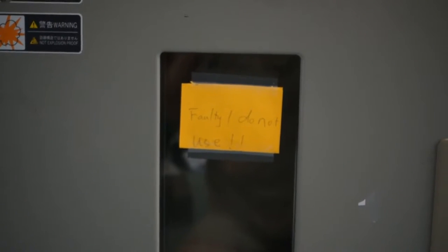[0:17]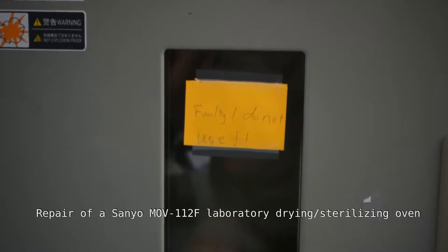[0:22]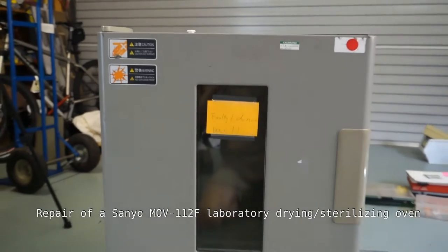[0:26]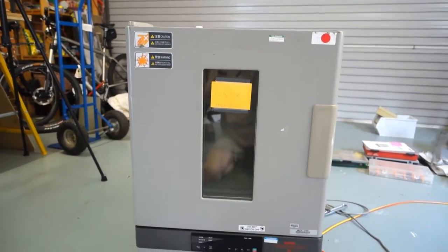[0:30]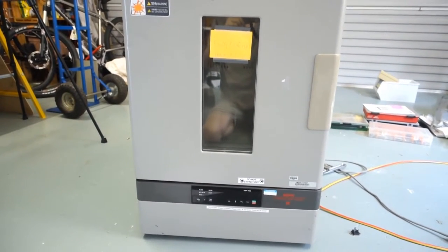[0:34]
Faulty, do not use! What are we looking at today? Well, I'm looking at an oven. It's not a cooking oven, but a sterilizing and drying oven. It's not worked for years. Somebody just asked me to have a look at it, so that's what I'm going to do.
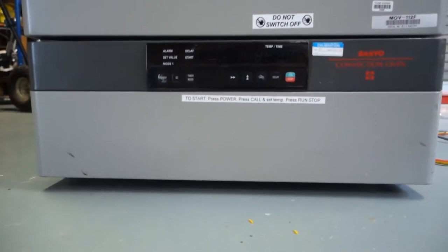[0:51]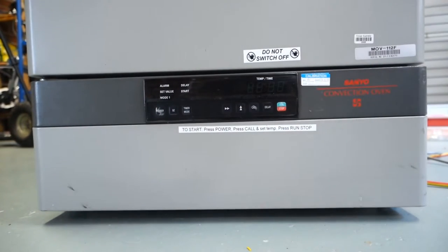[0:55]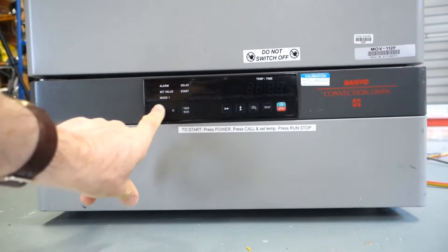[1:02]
Now, I have to admit, I've had this powered up just a few minutes ago just to see what happened. So I'll go through that and then we'll start talking about what the problem might be. I'll pop the camera down on the ground. Having to work on the ground today, it's just too heavy to lift up onto the bench. If I switch the unit on, there is an on-off switch on the side, and then there is a power button. It actually does power up.
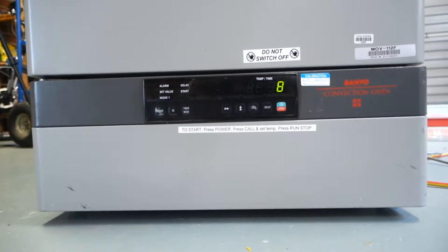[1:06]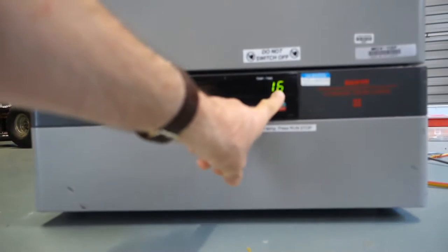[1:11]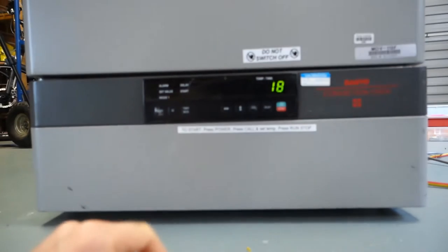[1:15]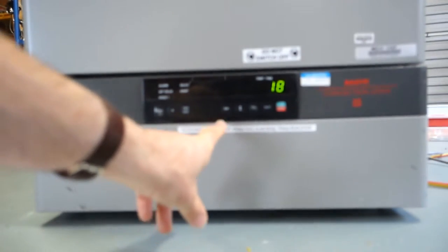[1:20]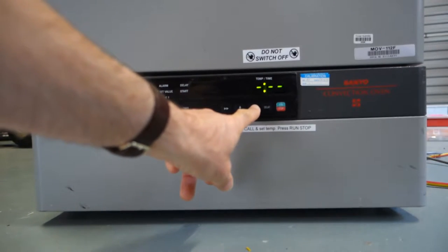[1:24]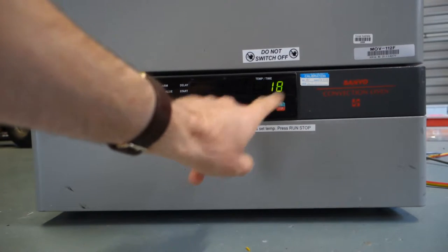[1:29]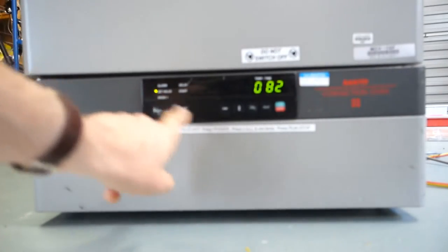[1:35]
Not a bad start. Who says there's a problem with this? I don't know. Anyway, it looks like we've got temperature showing in the indicator here, and that's pretty typical. It's about 20 odd degrees outside, so 18 degrees here in the garage. I think if I press this button, it toggles through three different settings. Temperature, obviously, of the probe. I think this is a temperature setting, set value. And then the last one is some sort of timer.
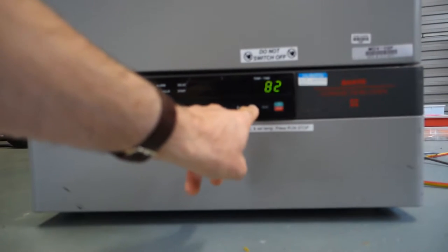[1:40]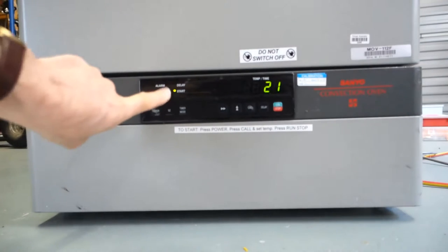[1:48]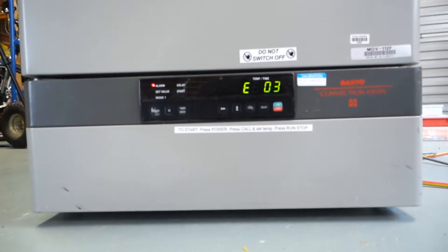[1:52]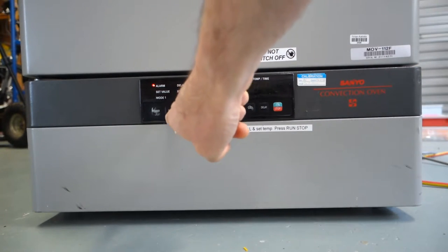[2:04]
I'm not interested in the timer. I'm just going to set the temperature, leave it on 82. It doesn't really matter. Now, if I press run and stop, it does actually start up. The light comes on, but within a couple of seconds, bang. So, not happy. And we've got an error code, error 03. As luck would have it, let me just silence that alarm.
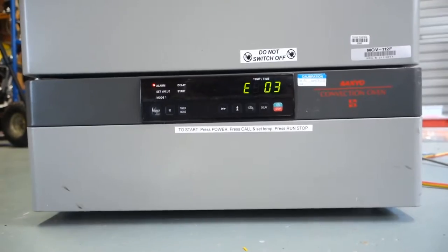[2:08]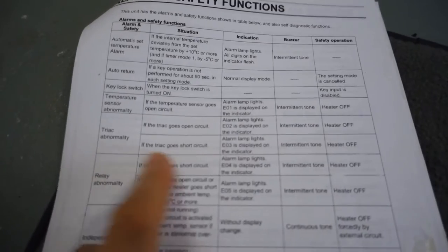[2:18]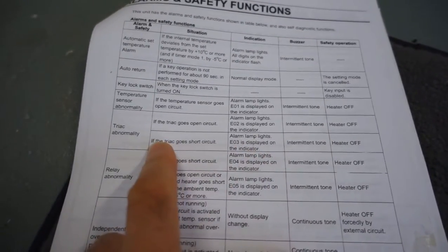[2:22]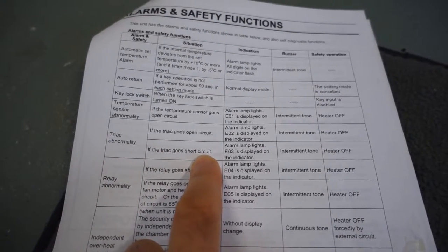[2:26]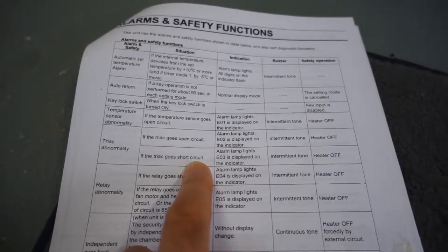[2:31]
Thank you very much. As luck would have it, I actually have a manual. I'm not too sure whether you can see this, but it talks about error 03 indicated in display, and it's about a triac going short circuit. Okay, all right. Time to switch it off and get inside.
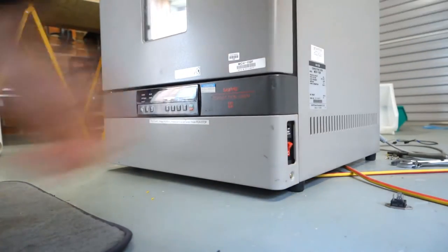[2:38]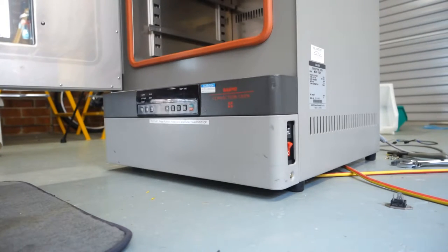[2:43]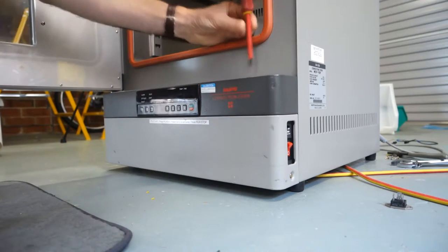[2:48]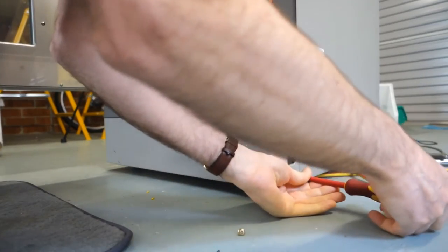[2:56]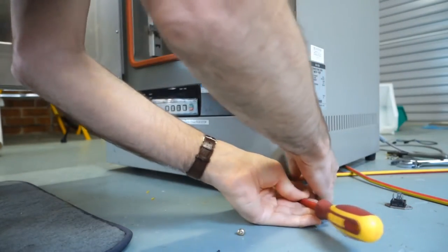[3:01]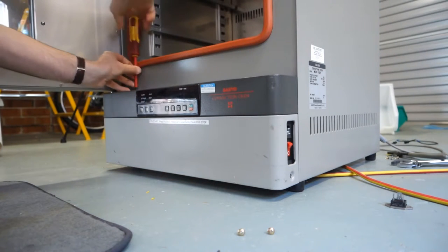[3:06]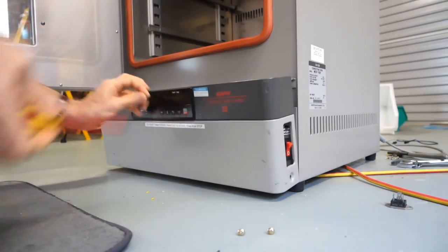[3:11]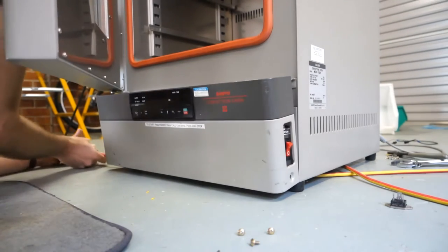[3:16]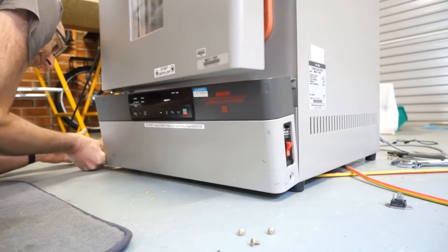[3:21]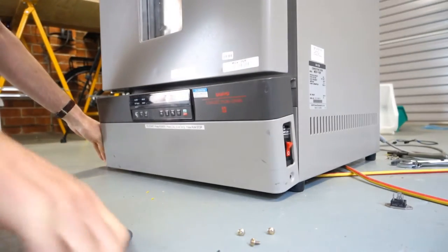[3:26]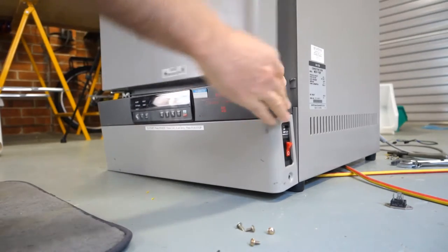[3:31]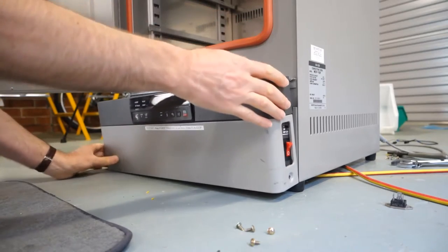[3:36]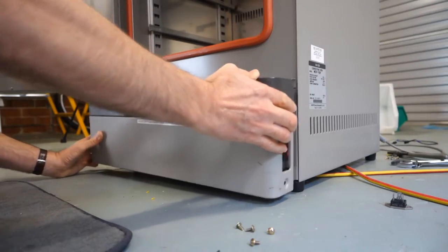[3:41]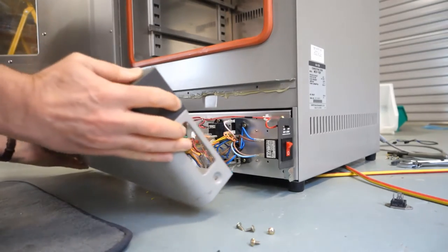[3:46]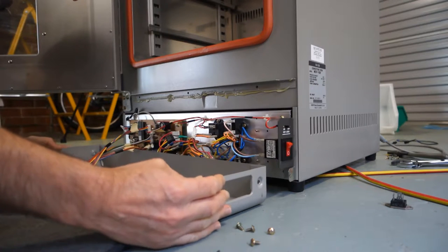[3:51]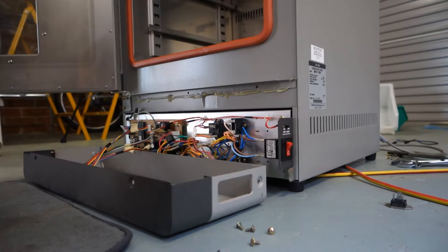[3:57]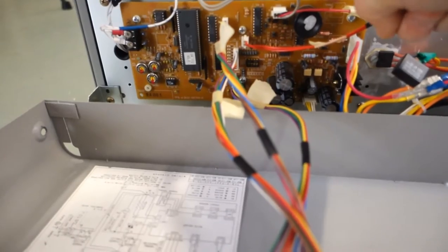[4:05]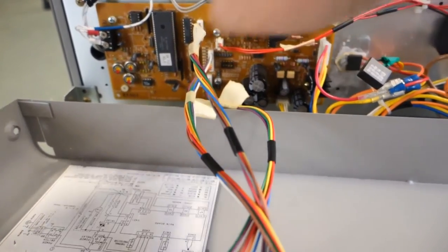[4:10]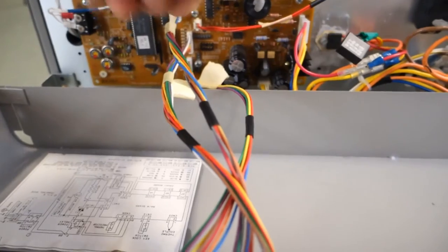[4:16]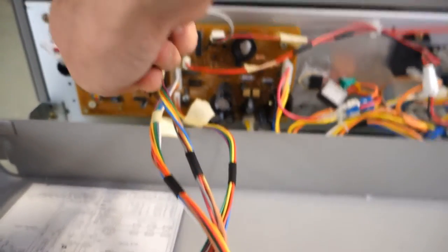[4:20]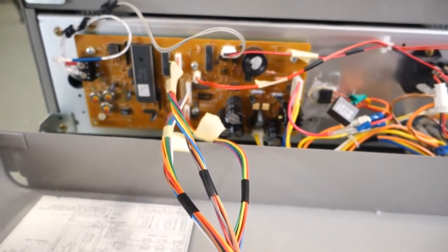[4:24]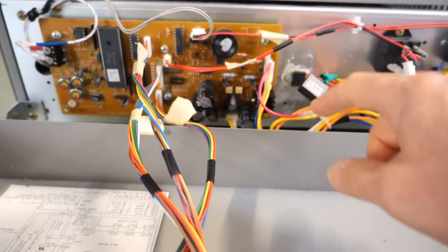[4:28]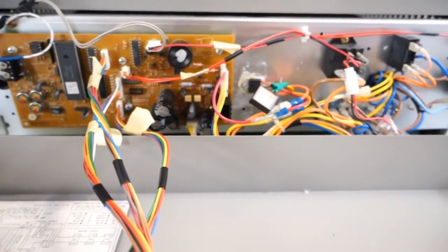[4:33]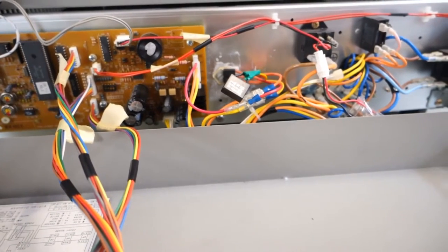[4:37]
Wiring diagram. Quite old school in here. So we've just got, it looks like a single sided board in here. The processor. The thermocouple looks like it's coming in on this left hand side here. That looks a bit, how are you doing? And so does this. Time to look at the diagram, I think.
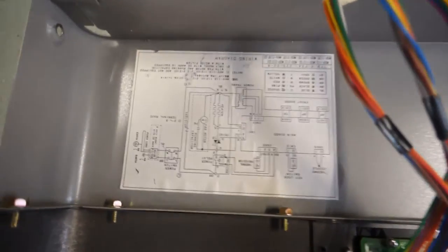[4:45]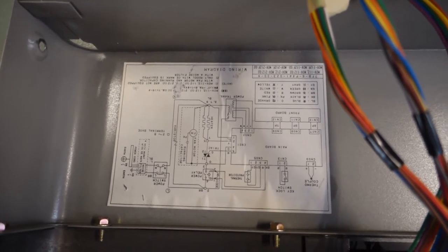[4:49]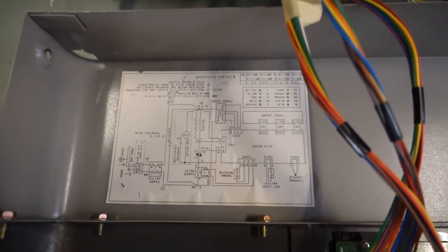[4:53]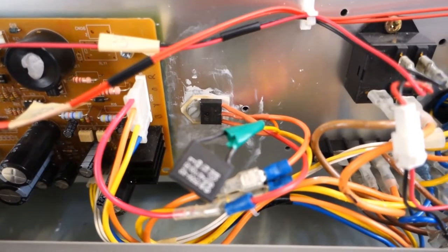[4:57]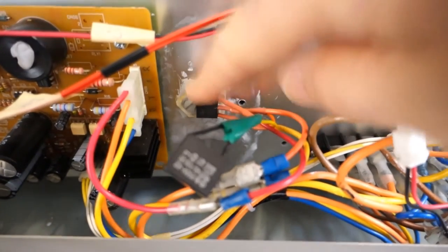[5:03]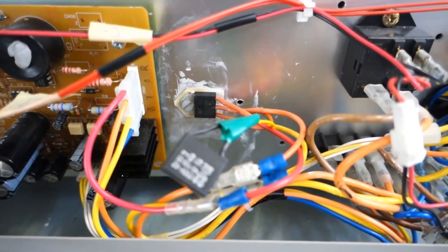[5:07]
As I say, there's actually a wiring diagram on the back of the panel. That makes things a lot easier. Don't do that so much these days, do they? I'll come back in a minute when I've had a chance to look at it. Okay, now there's definitely something wrong here. That triac there in the center of the picture is not the original triac anyway, so it looks like somebody's tried to repair that at some stage.
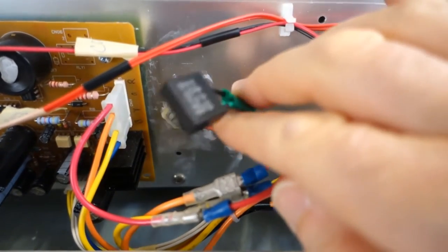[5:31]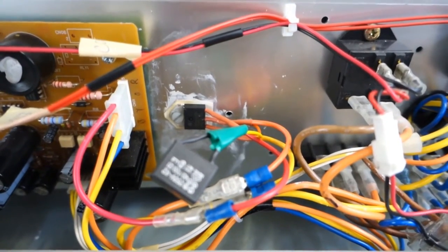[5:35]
I've managed to go online and download a full wiring diagram. The wiring diagram on the back of the panel here was useful, but I've actually found a more detailed one online, and I'll show you that in a minute. But that triac now is not original, and neither is this rather thing flapping around in the breeze. This X2 capacitor is supposed to be a MOV, metal oxide varistor. I'm not too sure whether that repair ever worked or whether somebody had a go, failed, and just left it. But let's see if we can find the original part and get that installed instead.
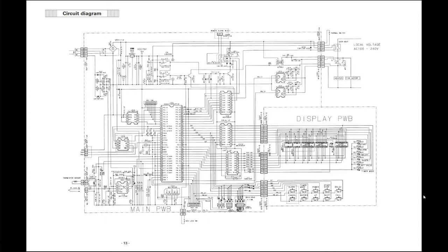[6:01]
Okay, here we are on the desktop, and I've been lucky and managed to find a whole PDF service manual for this particular oven. We're looking at the wiring, or circuit diagram rather, for this particular unit. It's rather small, but I am hoping that you can see up in this top right hand corner, we've got the triac, and you can just see the MOV sitting across the terminals there, the wiring coming into this connector here, and indeed the gate of the triac is driven through an opto isolator.
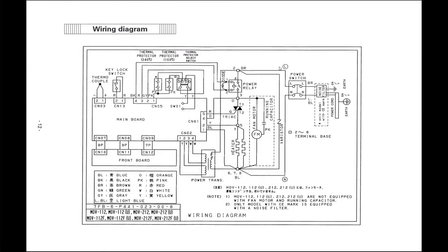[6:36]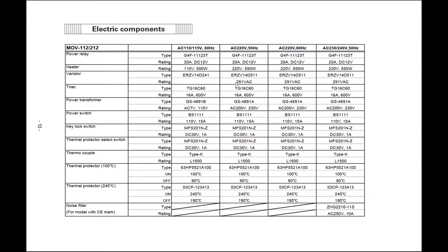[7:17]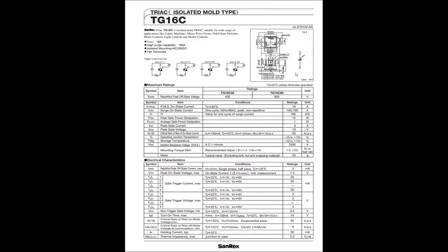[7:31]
Another very interesting page in the manual though is where the triac is denoted here. So I've got an actual part number that I've been able to search for, and I found a PDF for that particular part. And here we go, it's a triac. Indeed, it looks different from the one that's in there. It seems to have some sort of tabbed metal back, although it's an isolated molded type.
And a triac, if you don't know, is a fairly straightforward device. It's two diodes back to back, I guess quite similar to having two SCRs or thyristors back to back, the third leg being the gate that switches these. It allows the current to flow in either direction depending on which phase of the AC is running at that particular time.
So I've been able to find this device, the original equipment, on eBay, so I've placed an order for it, a few dollars. It's going to take around about 3 weeks, I assume, to come from Hong Kong or China, and so we'll get back to the video at that point.
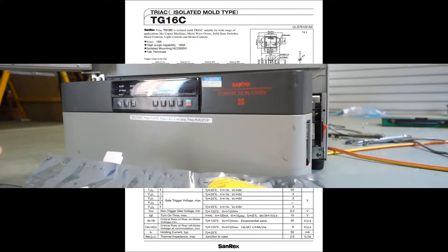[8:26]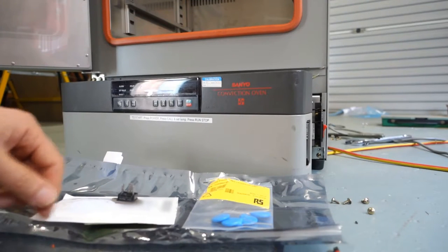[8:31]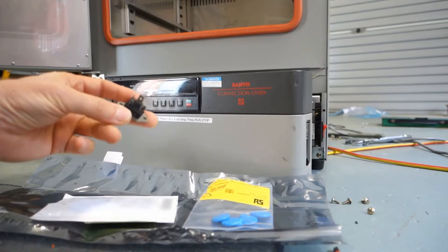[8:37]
So finally, here we are, about 3 weeks later. Just received this triac through the post, all the way from China. Sold as a new part. Not too sure it is though. I think I can see some evidence of where it's been clamped to a surface before, and those spade terminals don't look perfectly clean to me either.
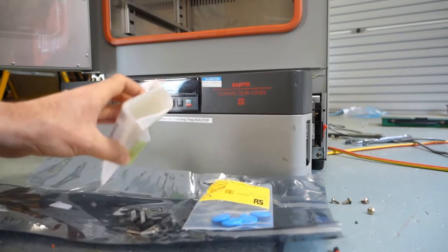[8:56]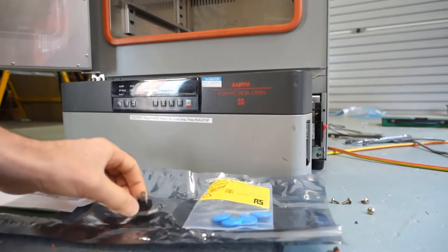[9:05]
Also, I'm not very happy because it was sent in a non-anti-static bag. It was just straight inside that envelope. Gee, I don't know. Let's hope it survived the journey.
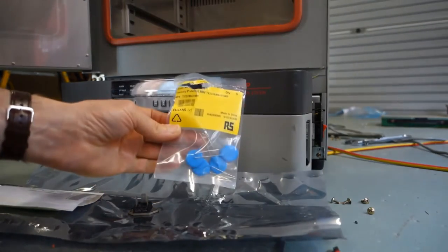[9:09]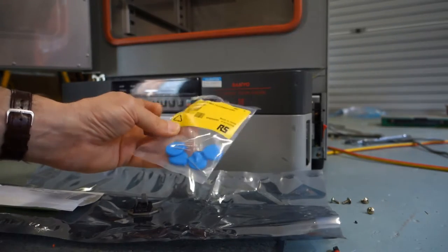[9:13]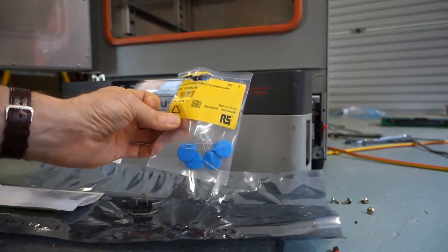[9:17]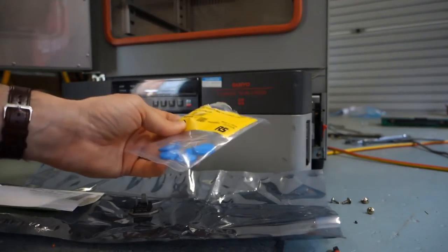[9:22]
I also bought a pack of MOVs from RS Components. So yeah, hopefully they're made in China too. But yeah, hopefully these ones are working and no problems. So let's just go ahead and put the actual item in, see if it makes any difference to this unit.
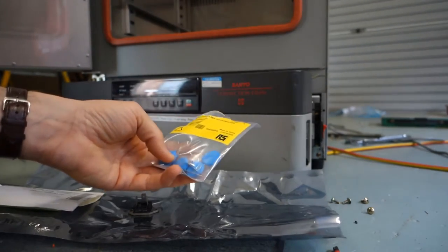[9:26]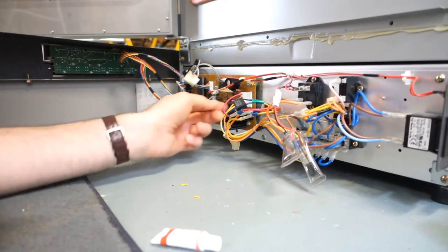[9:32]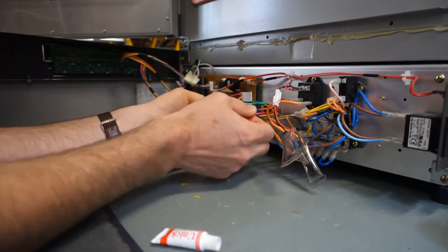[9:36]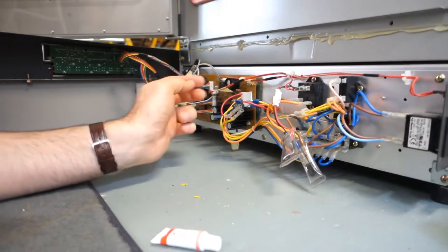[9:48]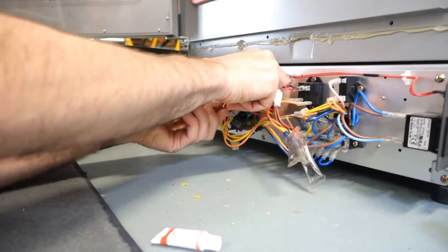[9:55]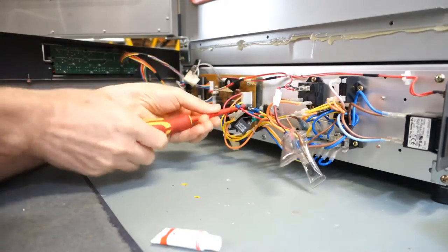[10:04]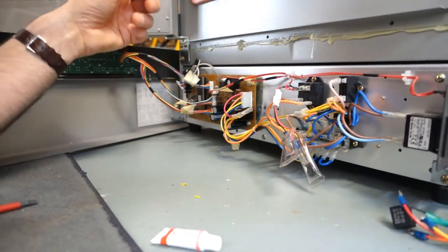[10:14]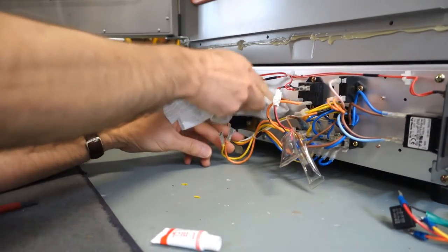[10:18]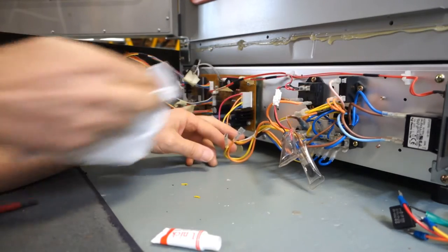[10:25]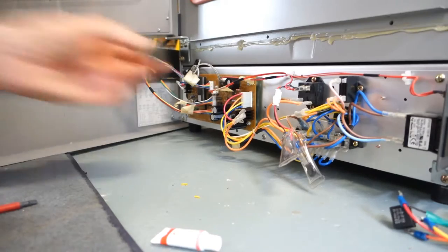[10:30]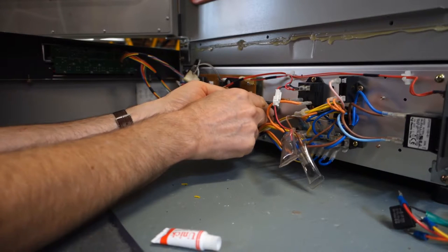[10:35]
Okay, now I have a wiring diagram, so I'm not so worried about just disconnecting these. Everything's disconnected, yep. That's good. That's good. So that can just come off in one go. Hands being in the way. That's quite a long screw. Okay, don't need that now. Clean this up a bit first. And we'll look to see whether... Yeah, those two holes match up there.
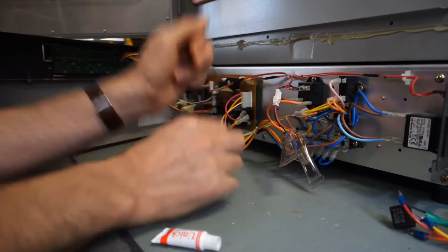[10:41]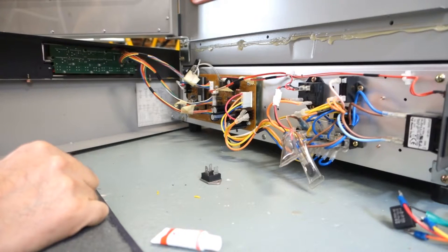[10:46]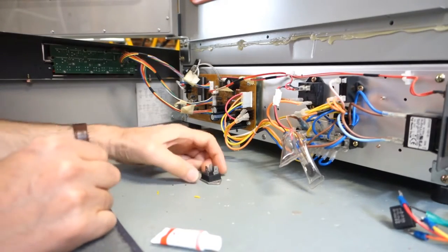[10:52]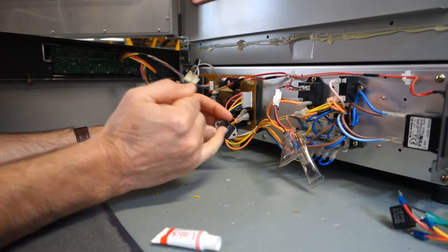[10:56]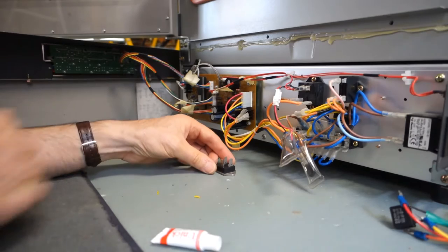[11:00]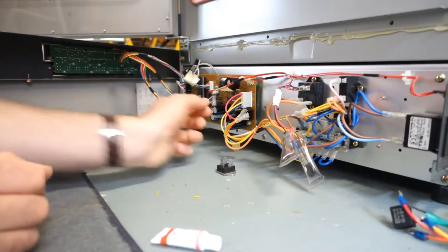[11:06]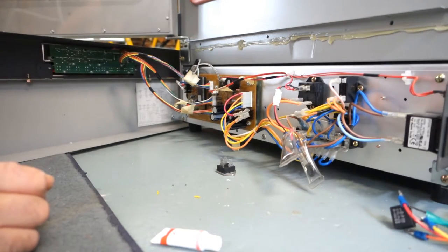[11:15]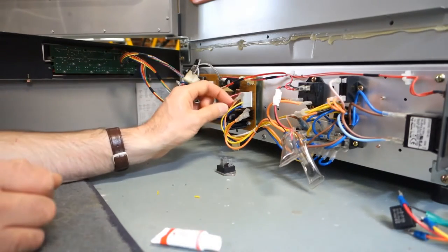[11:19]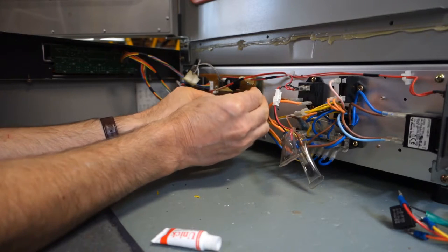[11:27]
Now this triac has got an isolated back, isolated mould type. And the three legs, there's two for the two anodes, and then there's this other leg here, which is a thinner leg, which, looking off the data sheet, is the gate. And indeed, that spade is just ever so slightly smaller. That matches up with the wiring diagram, that the red is indeed the gate. So, and the other two, I don't think it really matters which goes on which. And that one may end up there.
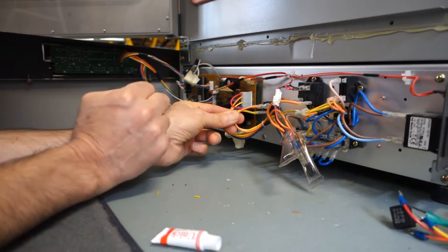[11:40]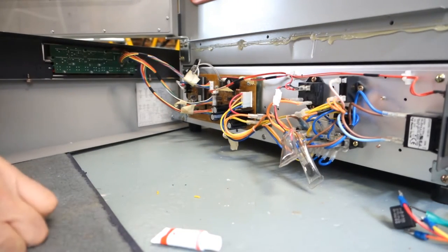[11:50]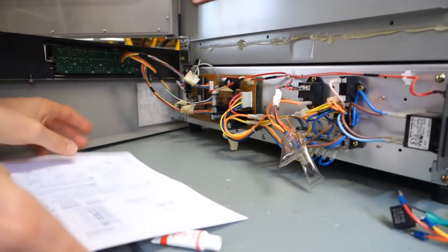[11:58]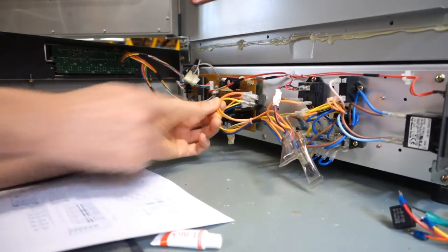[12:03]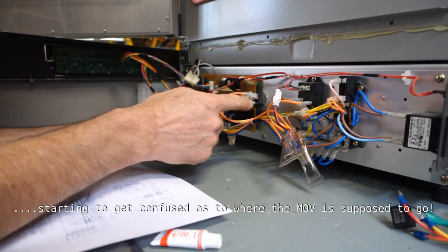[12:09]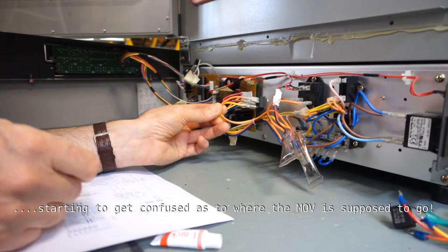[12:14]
And the only other thing is, how did they have the MOV mounted? Without seeing the original installation, I'm not too sure, but on the wiring diagram, the MOV goes across T1 and T2, so it goes across from here to here. Never think about that and come back.
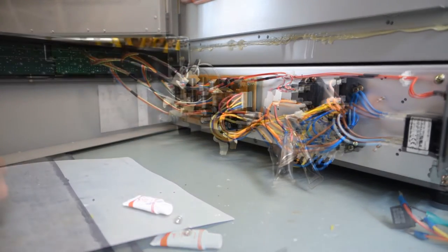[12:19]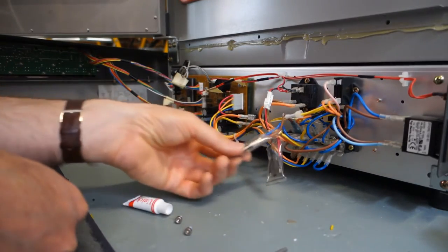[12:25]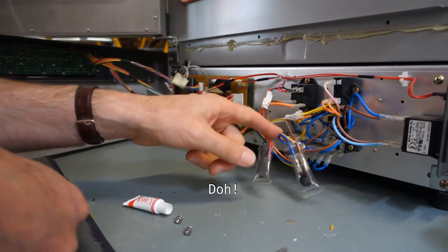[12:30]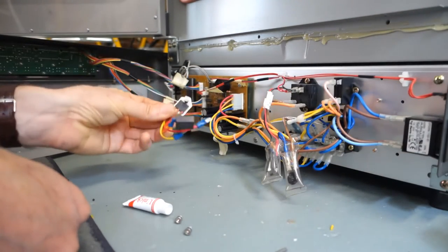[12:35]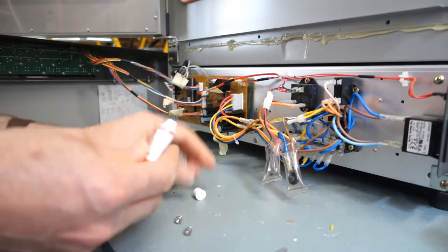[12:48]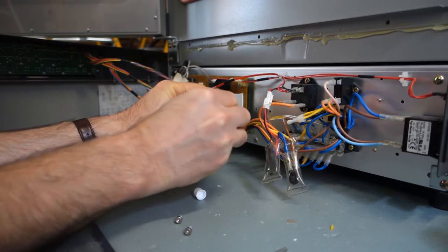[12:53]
Okay, me back again. My mistake, actually the MOV is already installed. It's this one here in this plastic sleeving. It's across the live and the neutral as you'd expect. I got confused because this old triac had this X2 capacitor and I thought somebody tried to use an X2 capacitor as a MOV. Don't know why. Anyway, everything looks okay. All I need to do really is get this gooped up with a little bit of paste, heat transfer paste. Let's get it mounted and we'll see whether the unit works.
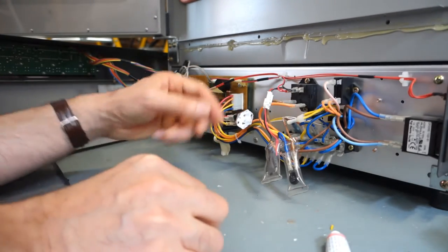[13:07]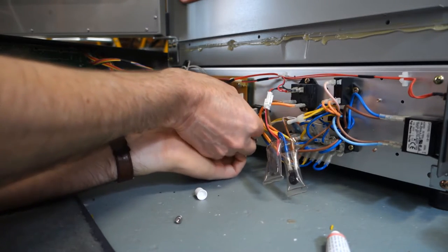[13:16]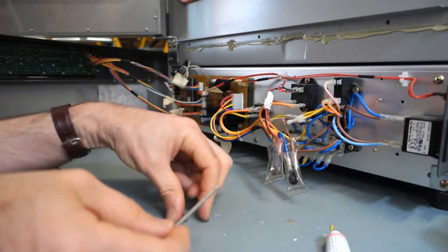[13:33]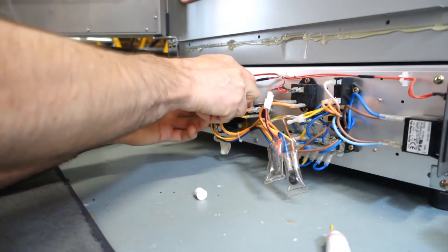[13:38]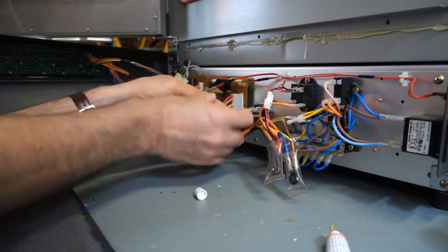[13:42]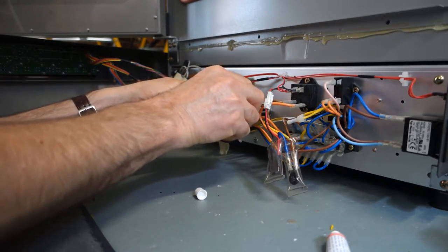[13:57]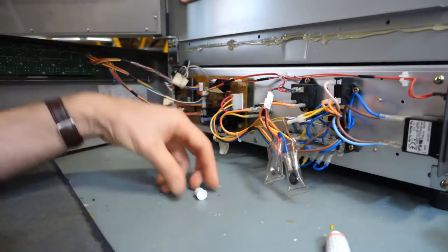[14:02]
Just covering that area. Yeah, as I said, it's an insulated back, or moulding rather, so don't have to worry about any insulation between triac and the chassis of the machine, although I will check it afterwards with a meter, make sure everything's okay. This cabinet's all metal, I guess it's painted, but it's basically all metal cabinet. That's the first one. Second one going in. And tight. Tighten that one up. Yeah, got a bit of paste squeezing out, that should be okay.
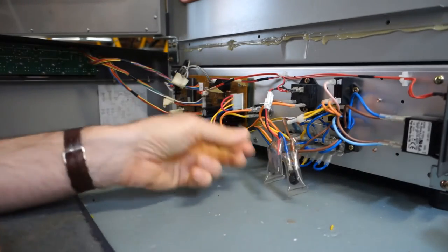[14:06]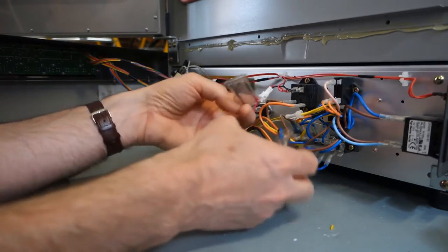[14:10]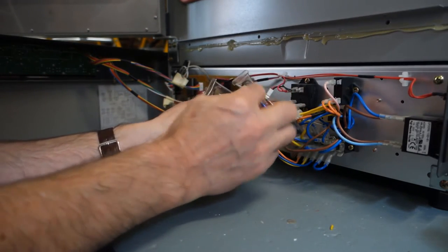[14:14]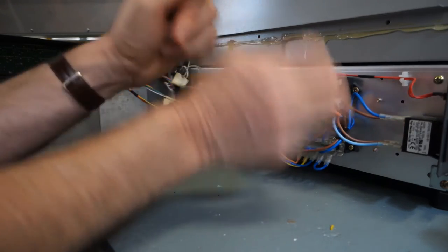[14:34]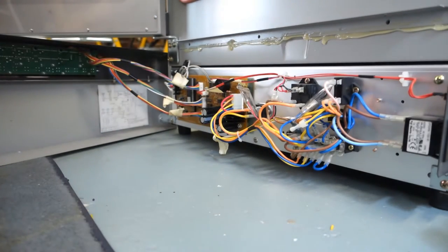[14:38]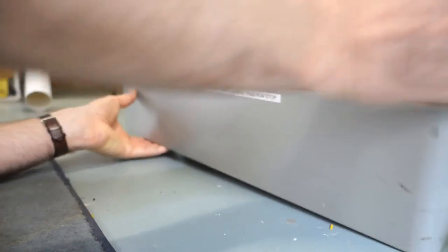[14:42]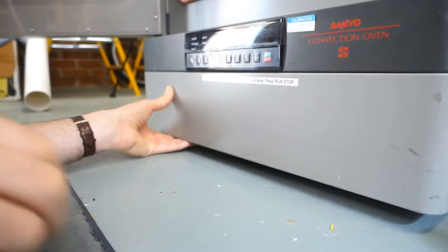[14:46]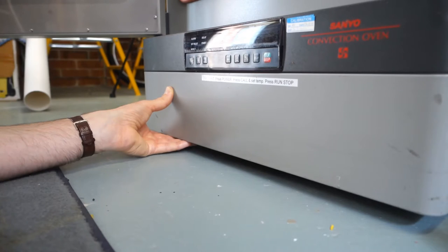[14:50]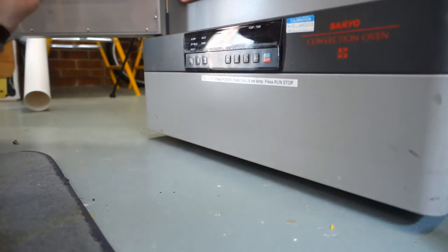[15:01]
Pop the top back on. Everything's looking okay. Very unusual, these, I think. Maybe it's old fashioned. Obviously, if this component were to explode or somehow catastrophically go wrong, there's a secondary sort of covering over them. The other ones are a diode. So, just carefully placing those back in there. Oops. Wiring looks okay. Let's just push this back in position. And I will just pop one screw in, the top here, just to stop this. Off, and let's give it a test.
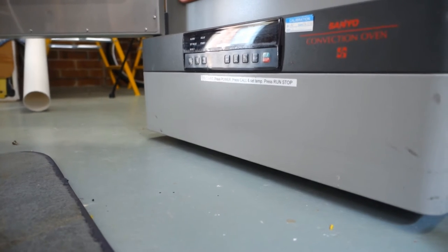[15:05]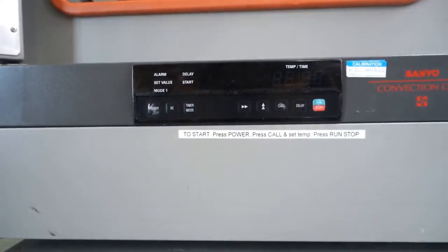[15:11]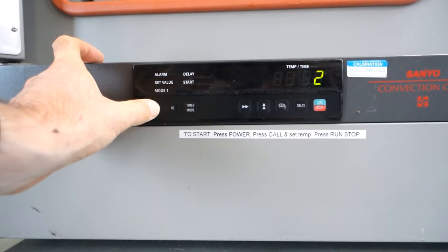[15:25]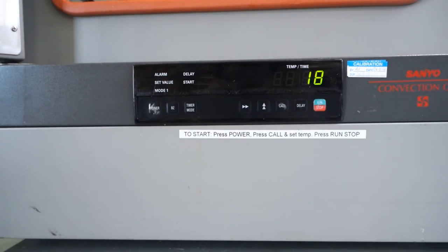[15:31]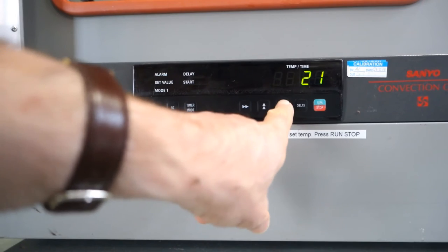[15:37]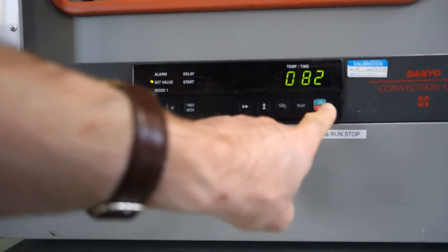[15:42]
I'll just move the camera around to the front. So, power on, all plugged in, switched on, power back on again. Interesting that that sort of ramps up. Haven't really seen that effect before with a thermocouple. Okay, call again, leave it on 82 degrees centigrade, and let's try start.
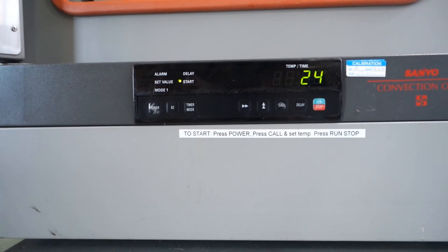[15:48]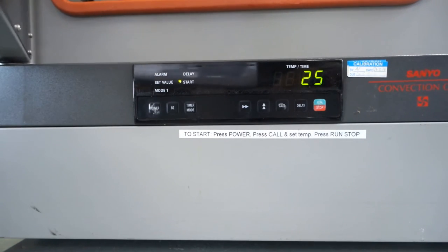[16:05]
I can hear the convection fan is spinning up. Nothing's gone bang yet. I'll shut the door. And we should see that temperature start to rise up, I hope. Maybe I'll just speed the video up for you guys here, but I'll leave it running and see what happens to the temperature.
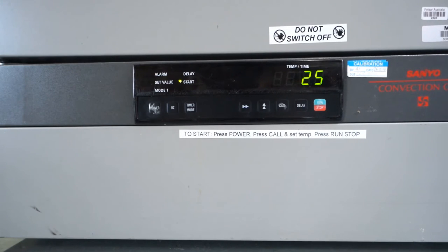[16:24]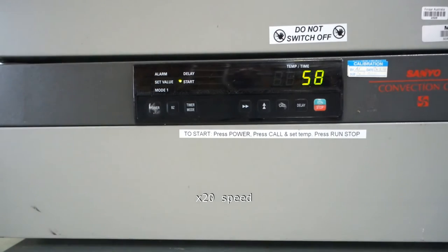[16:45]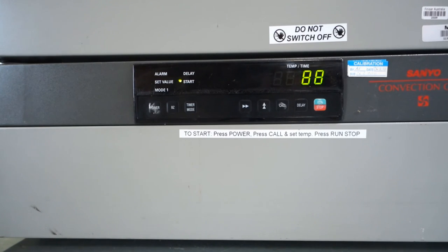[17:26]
Okay, I think that's enough. Can't really expect you to watch too much of an oven warming up and cooling down. It seems to have reached its set point temperature. Indeed, it sort of overshot by about 8-9 degrees at one point. Anyway, I can't be held responsible for the algorithm inside the controller there. Everything seems to be working fine now. Just need to clean the oven up and remove the sticker. What do you think? Has the green smoke gone back inside?